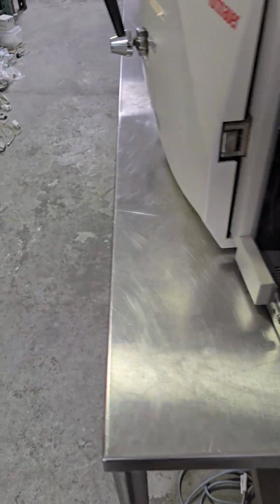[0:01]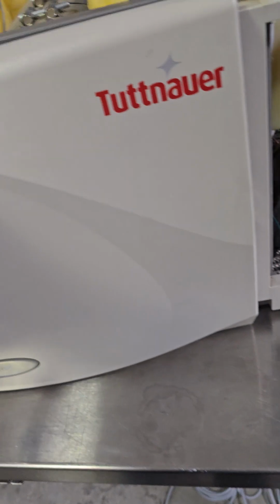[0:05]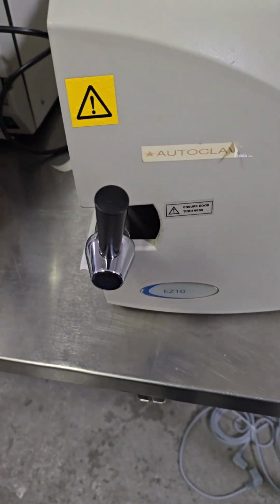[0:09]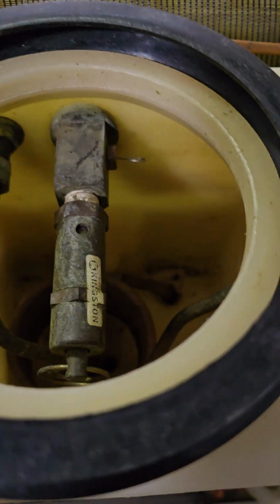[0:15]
All right, I was asked to show how to install the water level sensor on a Tuttnauer autoclave. So here's a Tuttnauer, an EZ10, just for show. An old parts unit, don't worry about that. If you're getting the add water message and you've clearly got water here, check your water level sensor.
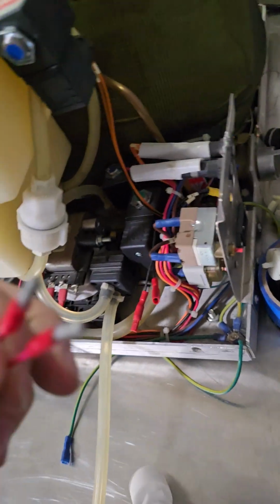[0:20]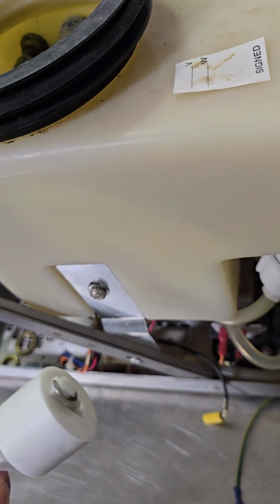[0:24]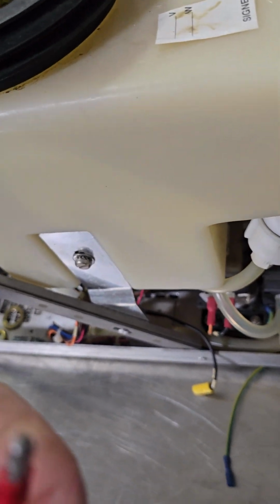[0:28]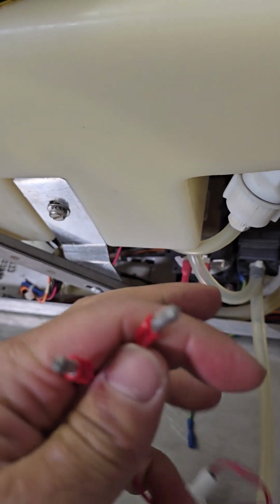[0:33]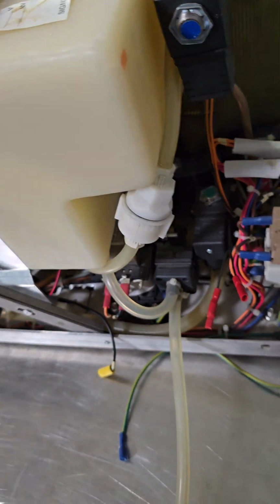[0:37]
All you really gotta do is ohm these out. If it's in the reservoir and it's full, this piece is up, you should be getting a resistance reading across these two. Just put your meter there. If you get an OL, then this is your problem. This thing is not working. They do fail, not often.
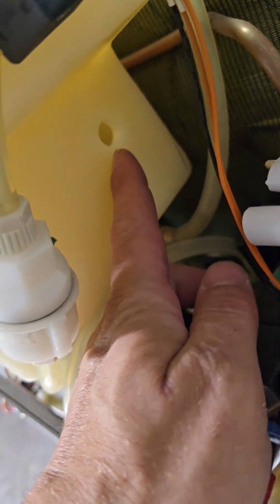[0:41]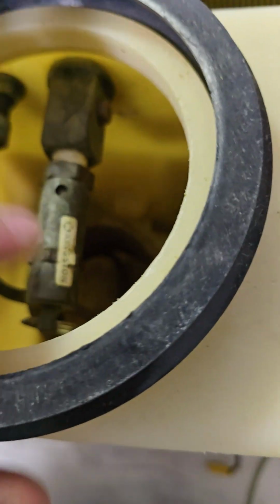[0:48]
So all you've got to do is install it. See, here's the hole where I took it out. You got to reach down in there. If you've got small hands, you can reach in there. Otherwise, pull the safety valve out and you get more access. And the safety valve comes out pretty easy.
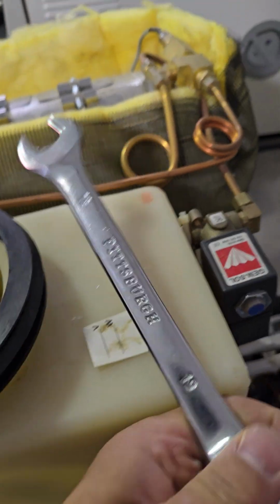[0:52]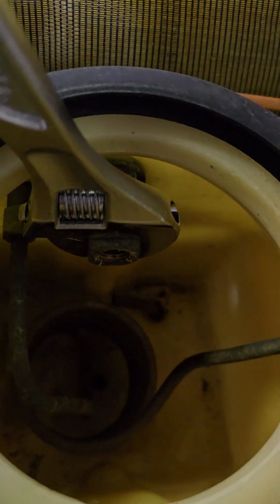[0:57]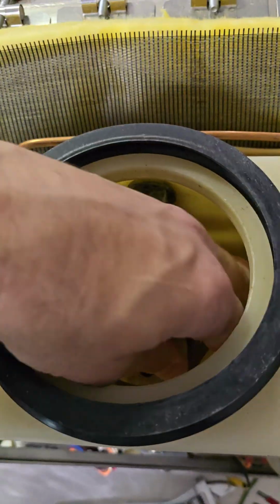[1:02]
All you need is, what is this? 19 millimeter? Whatever that is in standard. I can't think right now. Another wrench to put on here. Boom. Once it's out, you can reach in here pretty easy.
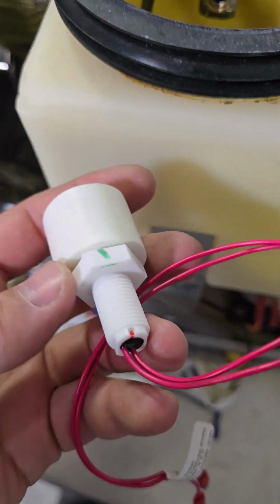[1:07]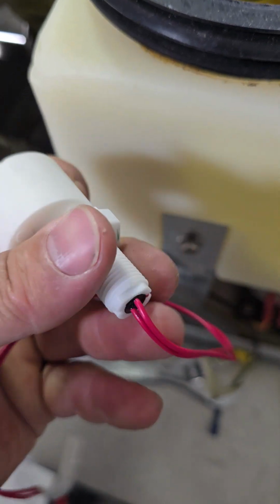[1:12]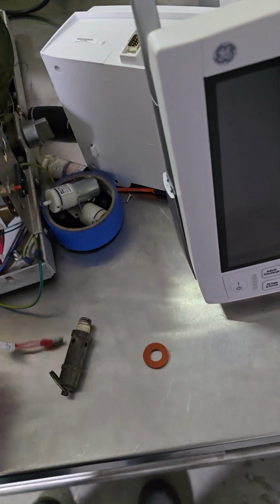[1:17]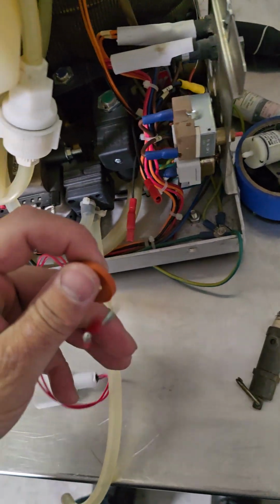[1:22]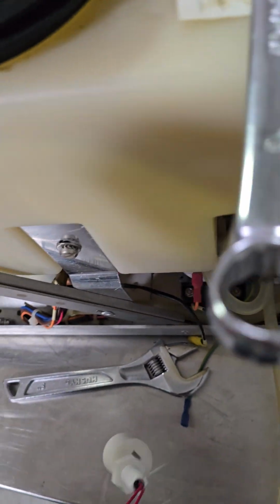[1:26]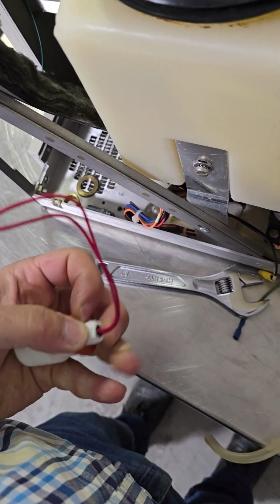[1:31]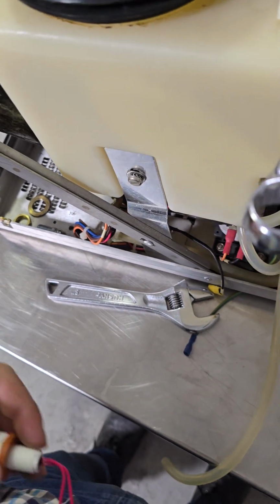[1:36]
So, all I gotta do, first thing is figure out which side is up. I made a little mark to show me which is the top, but also there's this little red dot in the back. So, that's where you want to do the top. The kit comes with a gasket. Slide the gasket on there. I like the gasket on the inside where the water is. You can put one on the outside if you want also. Doesn't matter. Anyway, drop it in.
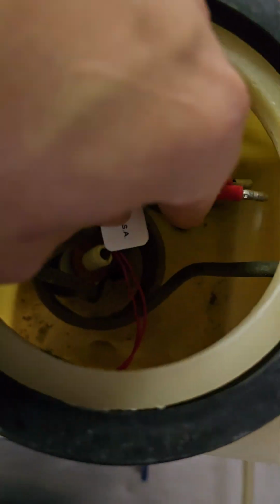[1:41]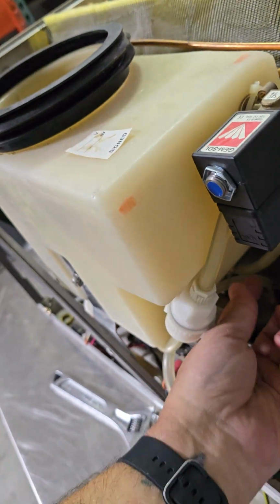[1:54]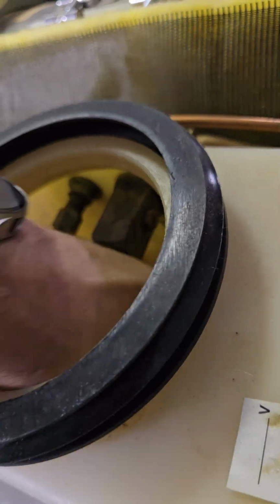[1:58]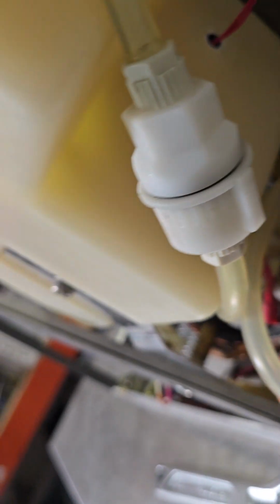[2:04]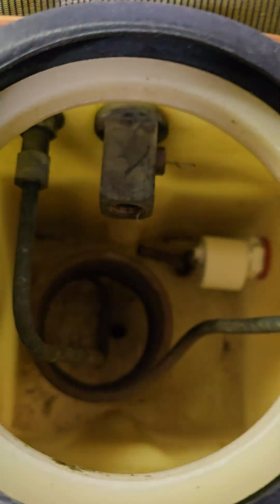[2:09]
I gotta do now snake or fish those little wires to the hole. There we go. Pull them through. Push that whole threaded body through the hole. There we go. Red dot's still up, so we're in an up position. Almost.
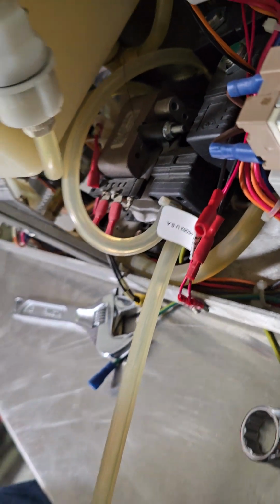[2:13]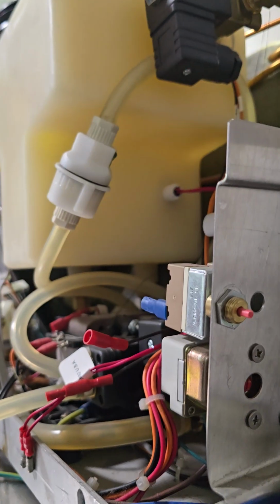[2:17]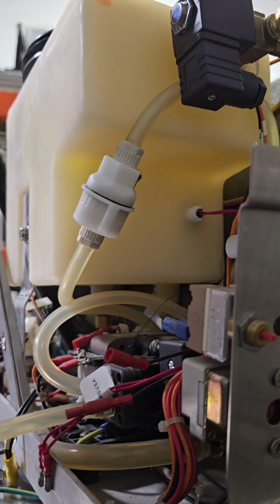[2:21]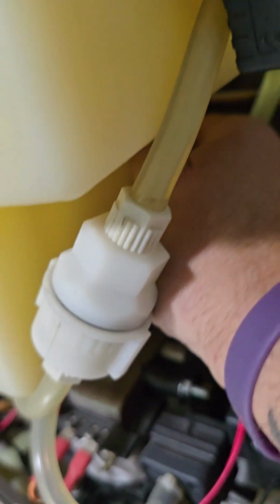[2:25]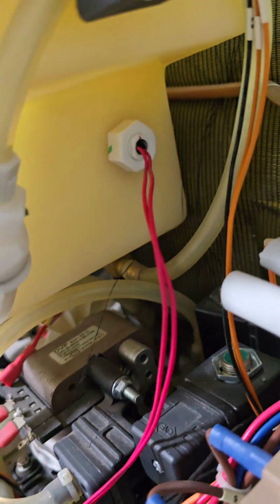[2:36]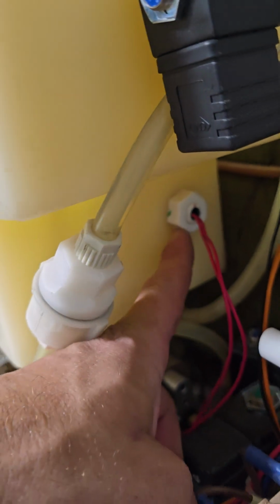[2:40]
Alright. Now the nut. So you get that nut on there. Don't go crazy. It's plastic. If you try to over torque it, you're just going to break it. You don't even need a wrench. Just your hand, more than enough to make it snug. Now if you want to put some silicone out here, it's a waste of silicone, but that's fine. If you want to put an extra gasket out here, it's not a bad idea.
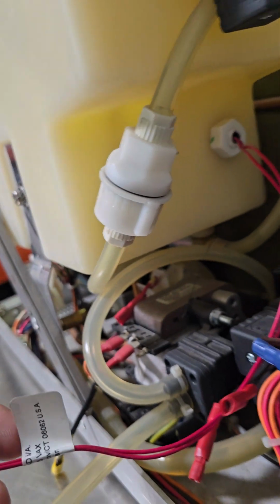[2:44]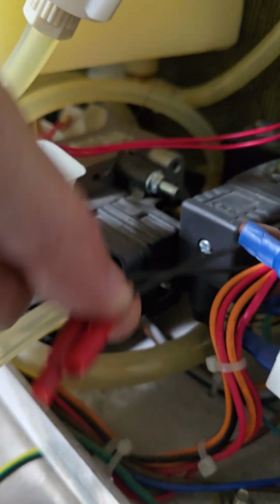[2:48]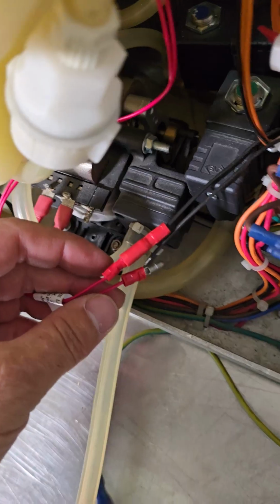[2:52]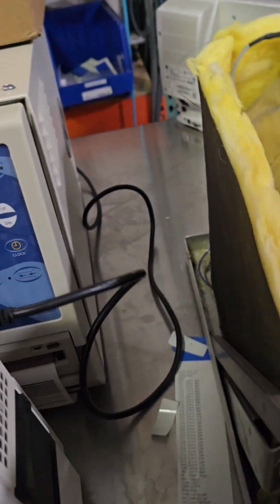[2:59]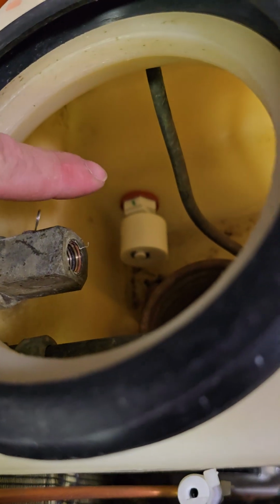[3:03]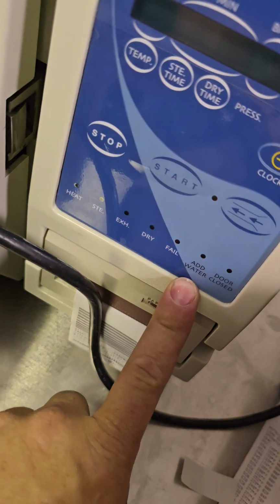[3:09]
Alright, now as far as where you plug it in, these are the wires going to it. These little black guys, it might be a different color than yours. And that's it. And now, if I had a front panel, let's go to this one. Now when you turn it on and you have water in here and that is floating up, because that's why it's called a float switch, the add water light will go off.
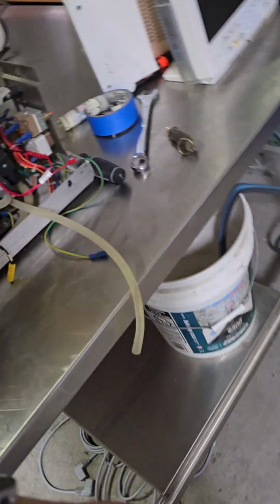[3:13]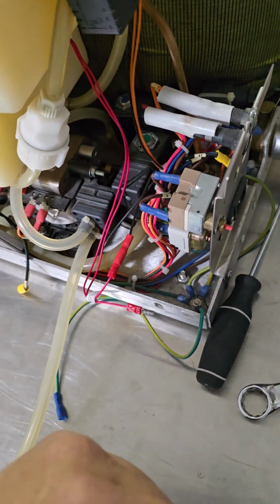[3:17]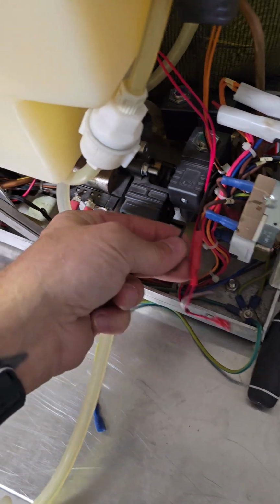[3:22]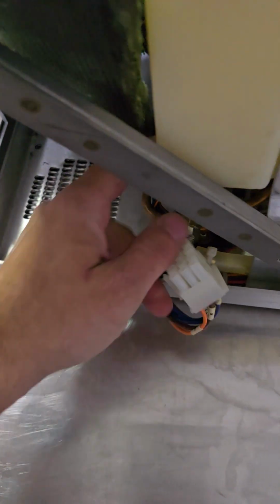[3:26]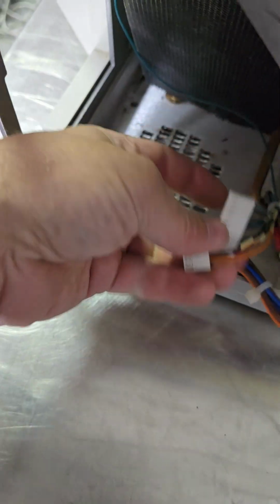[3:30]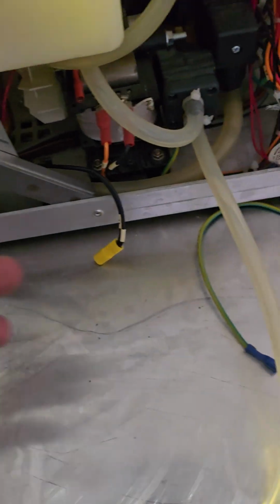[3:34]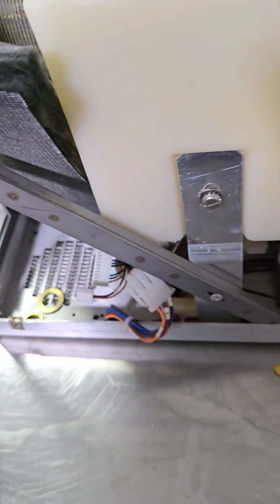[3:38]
If the add water light is still on, you have ohmed out these leads and verified that this is working properly. Check continuity on these two wires. Those two wires, trace those to the front. Should be this one right here. Actually, no, I think it's this one and a ground wire, but trace it, check continuity, make sure cabling is good. After that, your adjunct board might be the problem. All right, good luck out there.